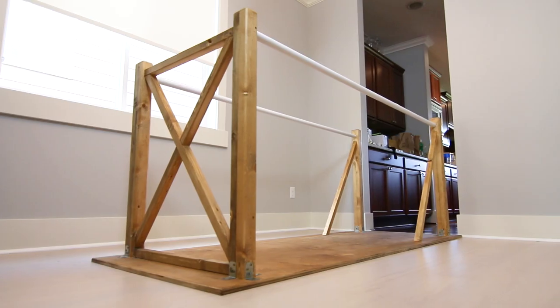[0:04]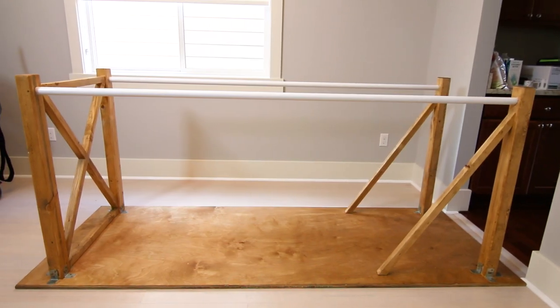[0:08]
For exercise or rehab, any way like that. And basically I hope this video helps a lot of people out there who are trying to make these. So I'm basically gonna list everything in the description for you for all the products and materials I used. And so let's get started.
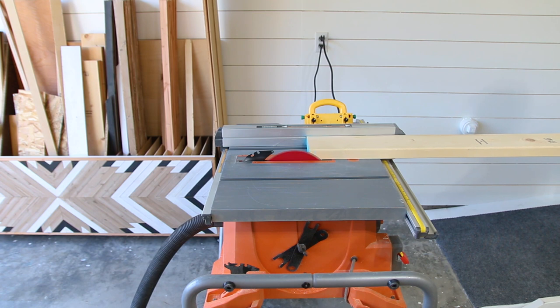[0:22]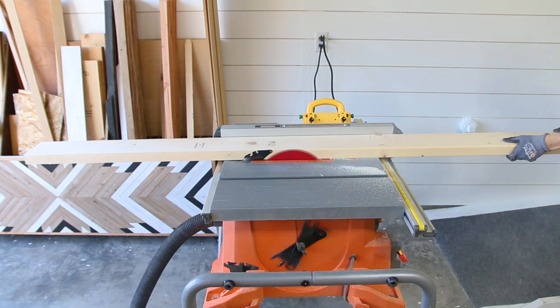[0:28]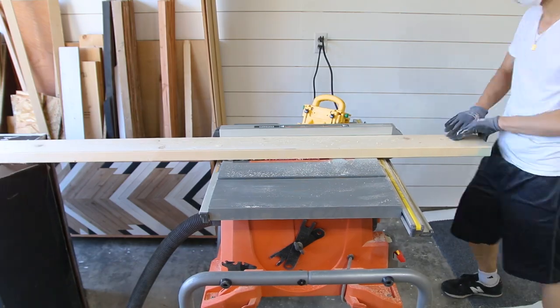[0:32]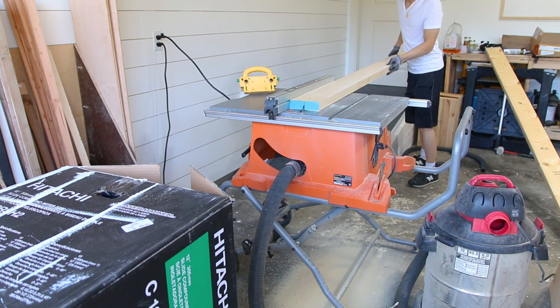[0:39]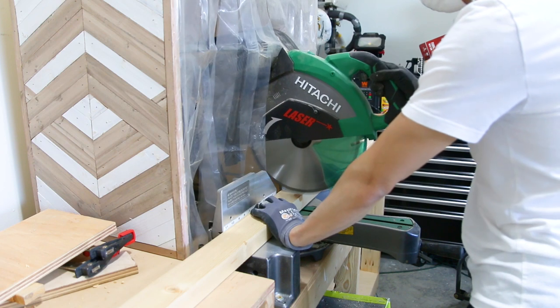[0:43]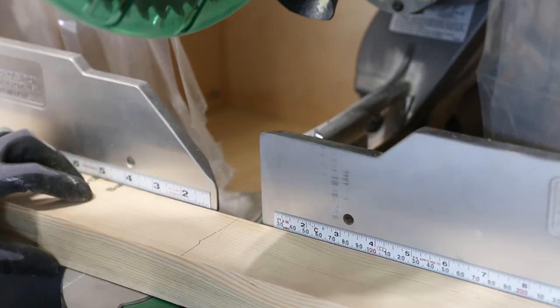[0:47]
One of my family members recently had a stroke and is trying to relearn how to walk again, so I decided to make parallel bars to help them rehab. The first thing I did was I got measurements from the physical therapist for proper height for the bars and also the width for the wheelchair to fit in between the bars. Some will not need a wheelchair to fit inside, but for my situation, that's what was needed.
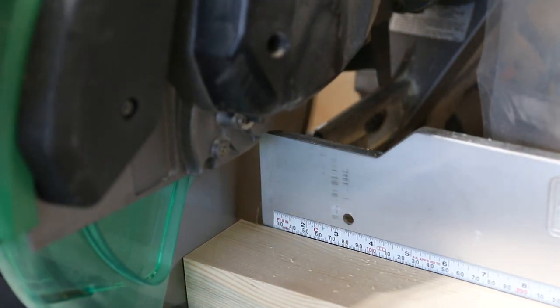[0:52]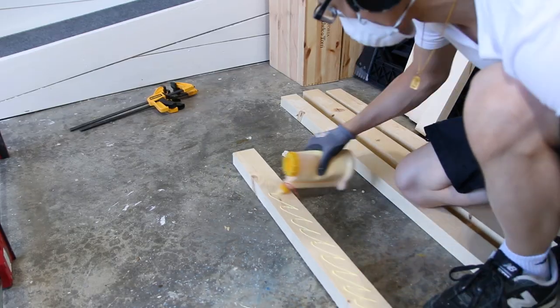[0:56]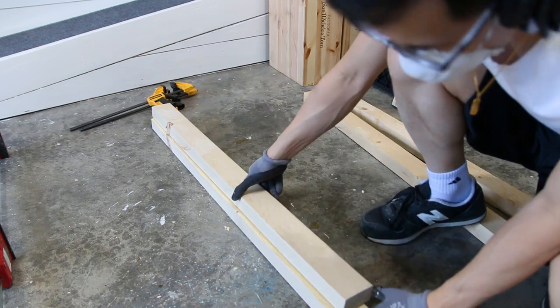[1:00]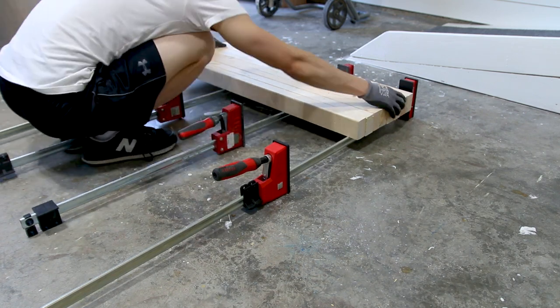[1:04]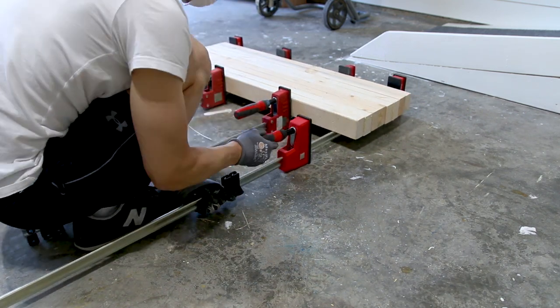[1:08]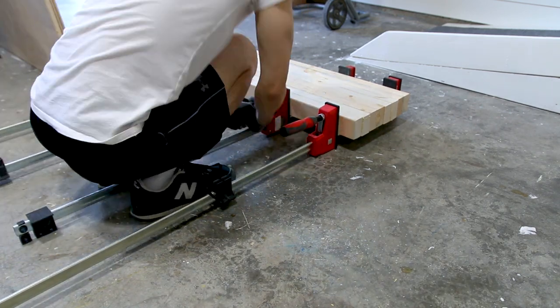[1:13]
You could also just make parallel bars for exercise. So this project actually has dual usage for me, and I can do dips, work out my abs on these bars. So for those of you who want an in-depth detail on how I built this, the second half of the video will go over everything in more detail and instructions.
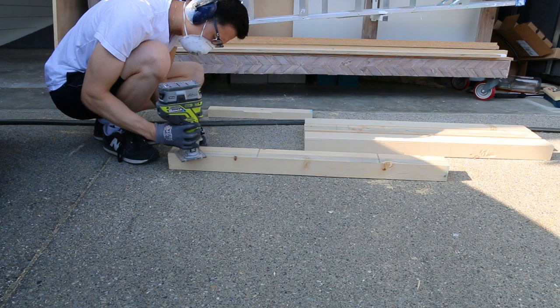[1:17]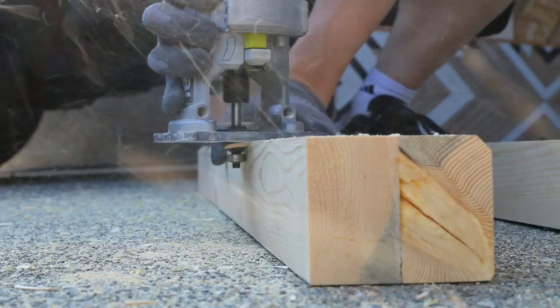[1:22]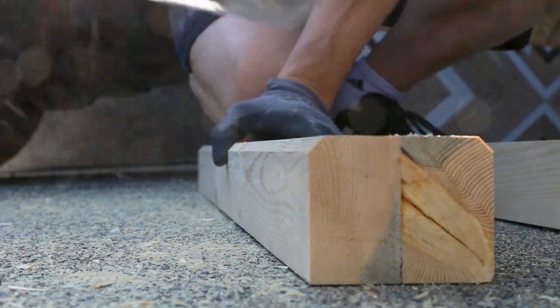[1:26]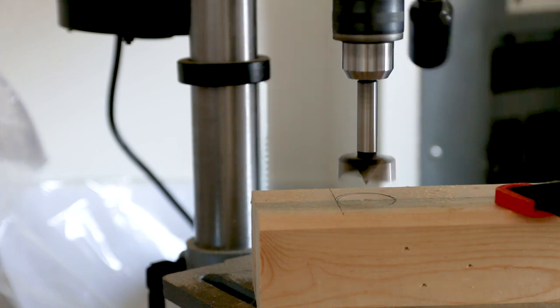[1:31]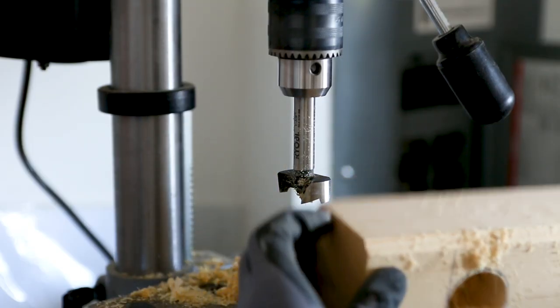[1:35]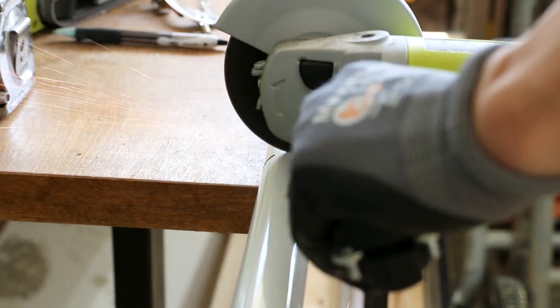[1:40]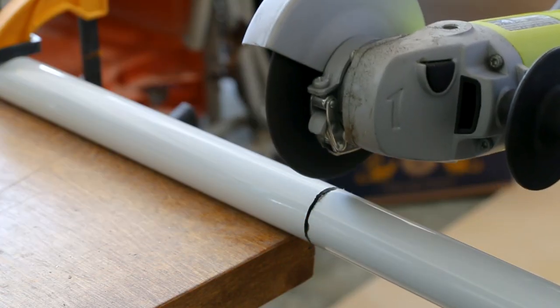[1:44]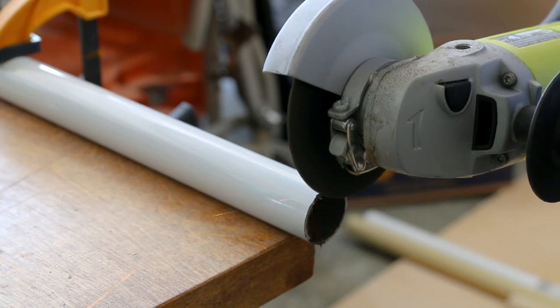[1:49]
When I first started to think of a design, I knew I wanted the parallel bars to be portable. I've seen a lot of videos on YouTube and Google search where people dig holes and pour cement to secure the legs of the parallel bars. There are also a lot of designs where people use PVC pipe that did not look aesthetically pleasing and just didn't look very stable in my opinion. And so I decided to use wood and metal for my main materials to build this.
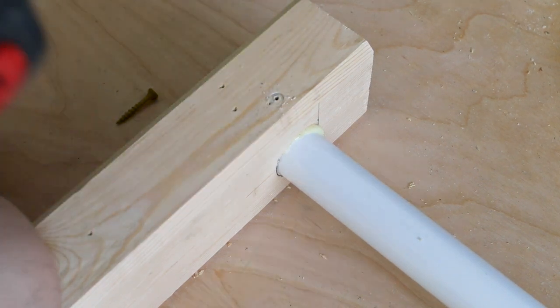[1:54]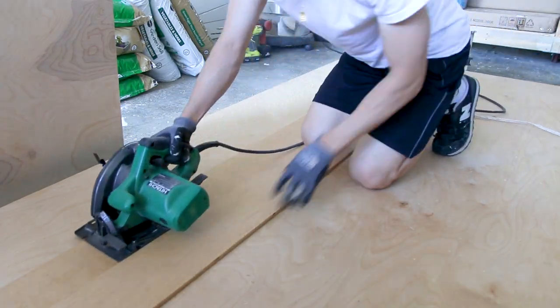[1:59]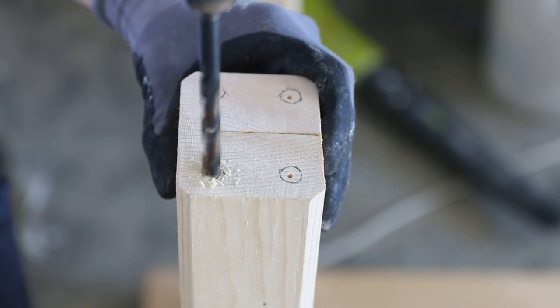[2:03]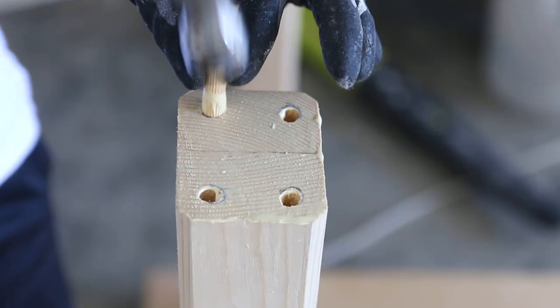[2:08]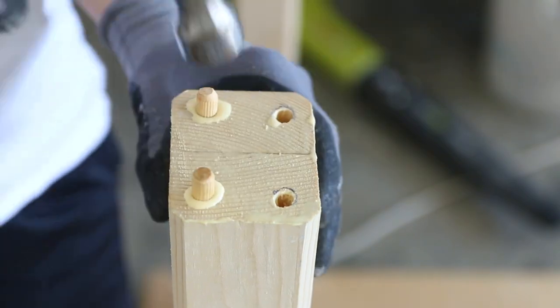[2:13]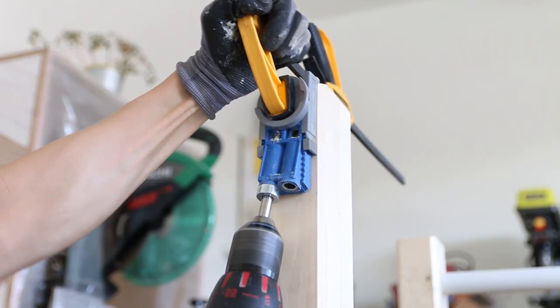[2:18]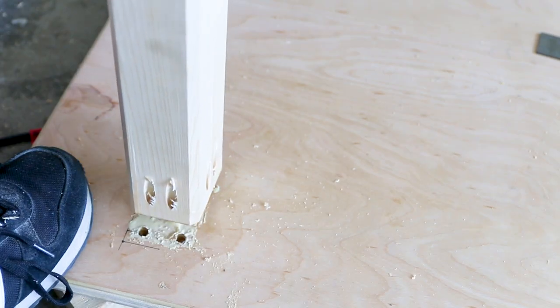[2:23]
The base was 3/4 inch maple plywood, and the legs were 2x6 legs cut in half and glued together. And then I used 1 1/4 steel closet pole rods as the bars. To secure the legs in place, I used wood glue, pocket screws, wooden dowels, and metal brackets. To secure the metal bars in place, I first drilled a hole into the side of the leg or pole, and then I used a screw to secure it in place.
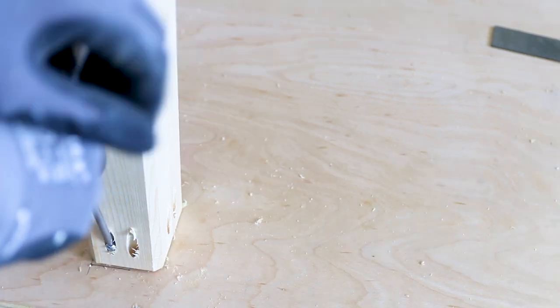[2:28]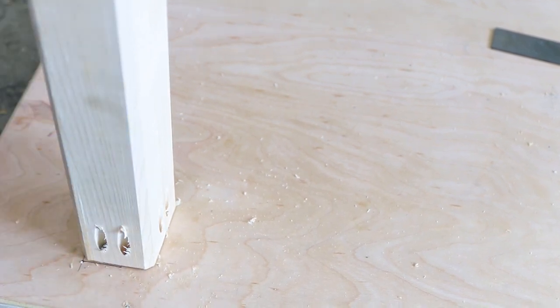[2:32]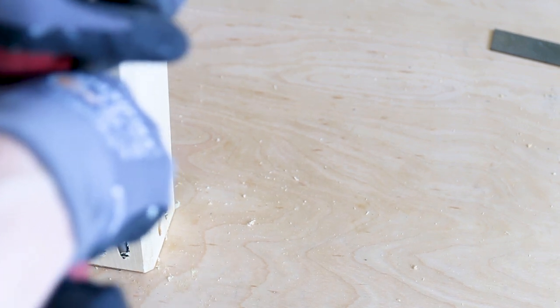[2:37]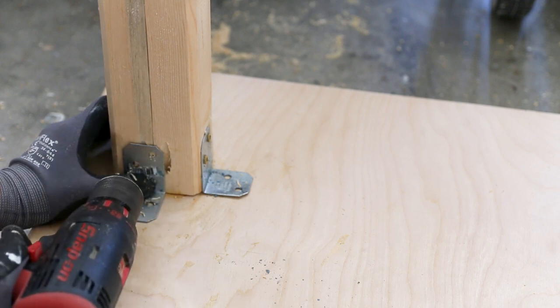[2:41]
Then I decided to make a farmhouse style end with an X design. This is both for aesthetics and to add strength. Then for the final touches, I used a router to round over any sharp edges, and I stained the entire project with Danish oil.
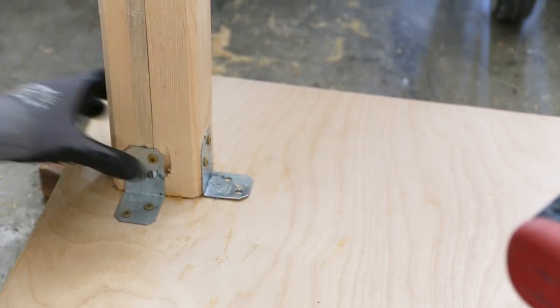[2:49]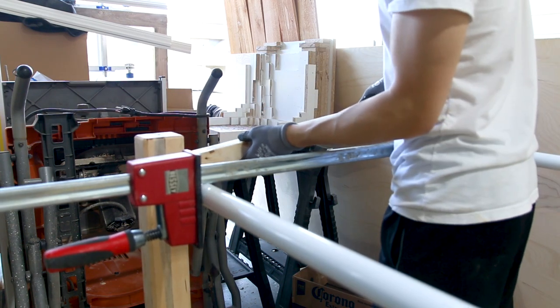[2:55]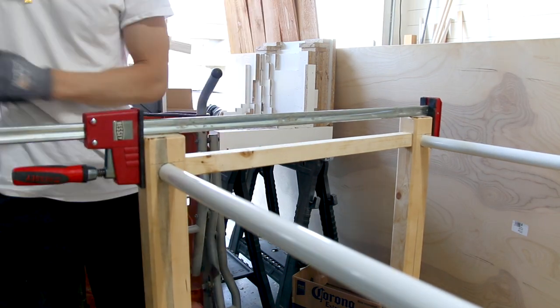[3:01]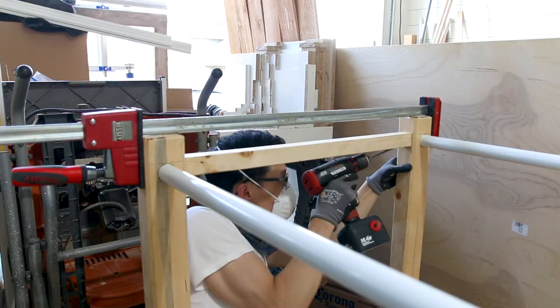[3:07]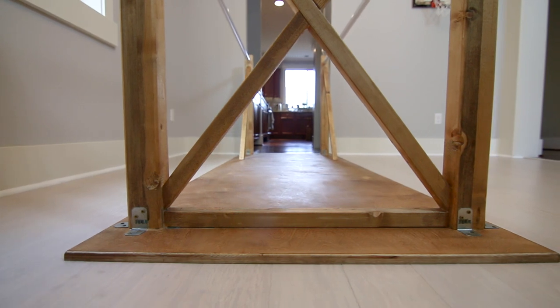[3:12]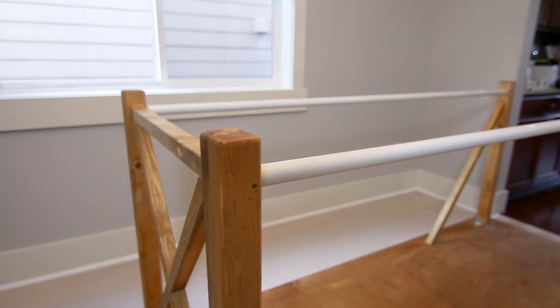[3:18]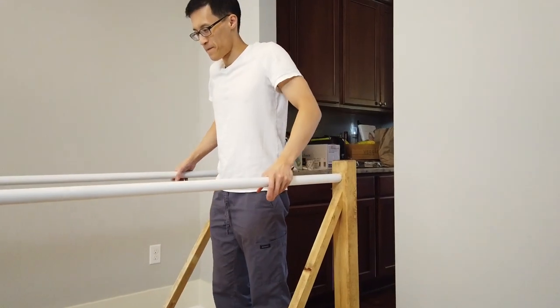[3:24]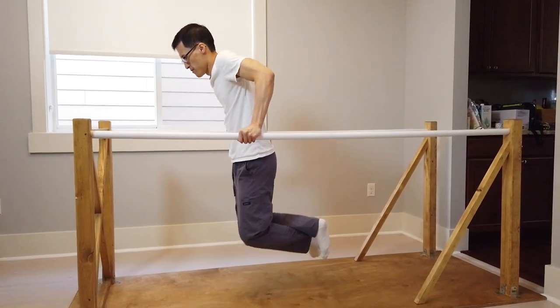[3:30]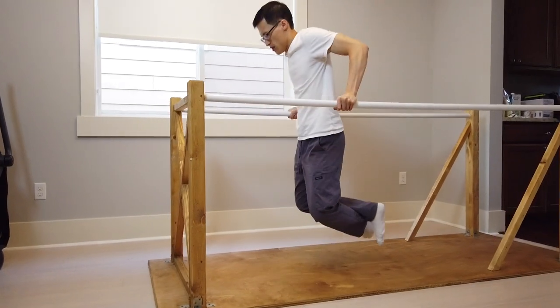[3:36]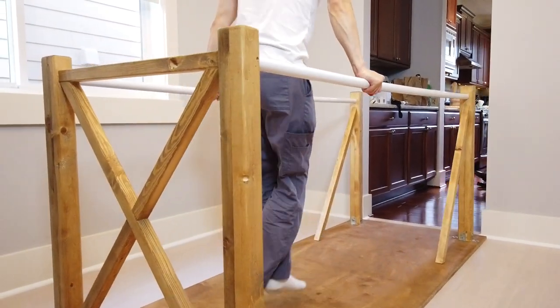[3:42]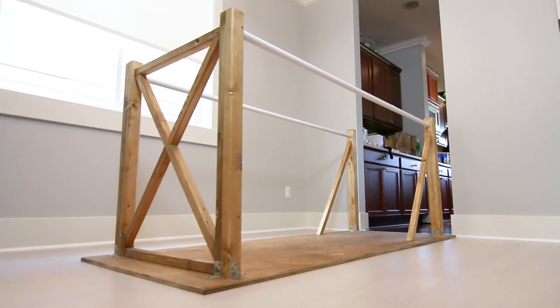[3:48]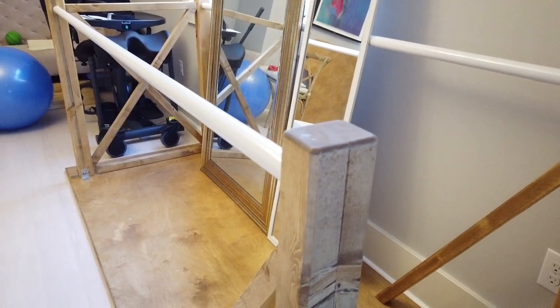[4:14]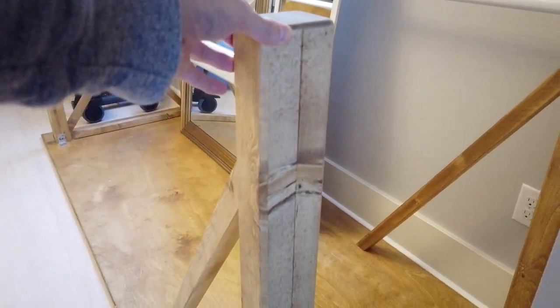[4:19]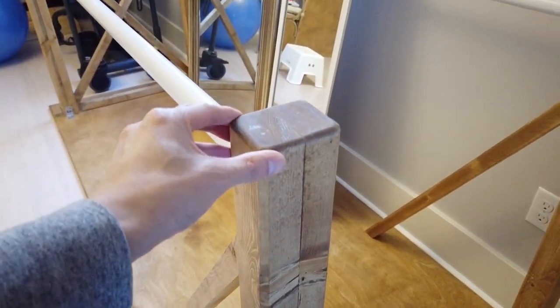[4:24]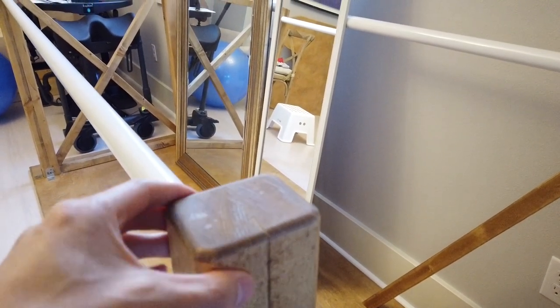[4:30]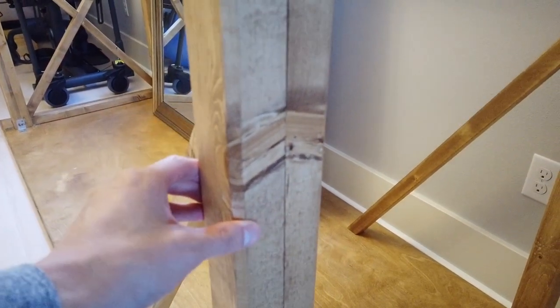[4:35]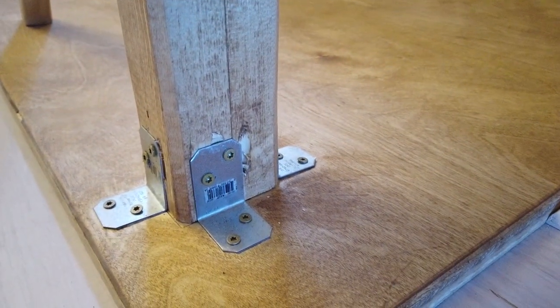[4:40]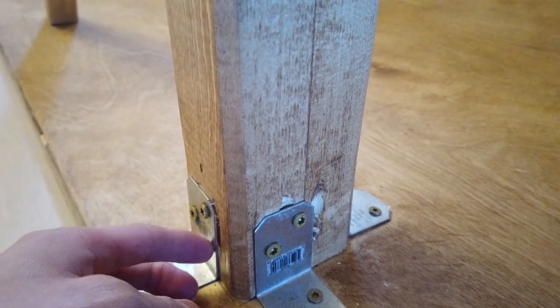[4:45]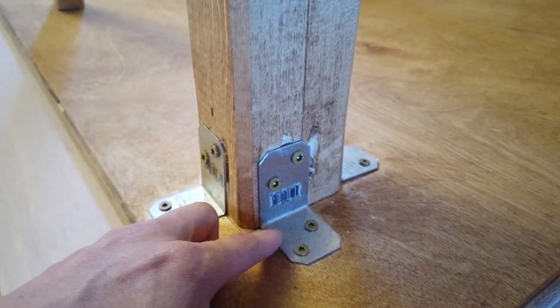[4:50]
Alright, so this is going to be the more detailed section of the video on how I made this. As you can see here, this leg or pole is made out of 2x6 cut in half, and then I just routed the edges round over here to make it a nicer feel. I glued them together and I used pin nails and clamps. And then to secure it to the bottom base here, I used 4 dowels in the middle inside, and then 2 pocket screws on each of the edges, and then I used these metal plates.
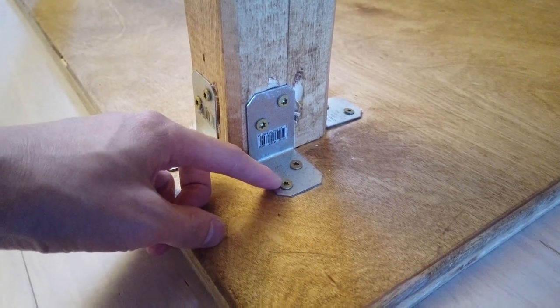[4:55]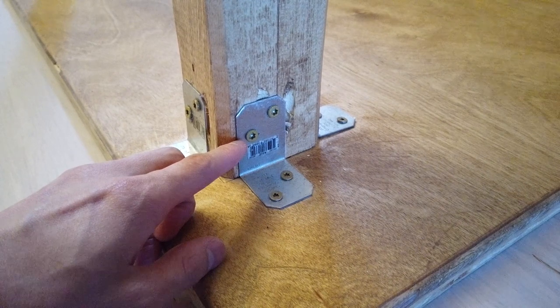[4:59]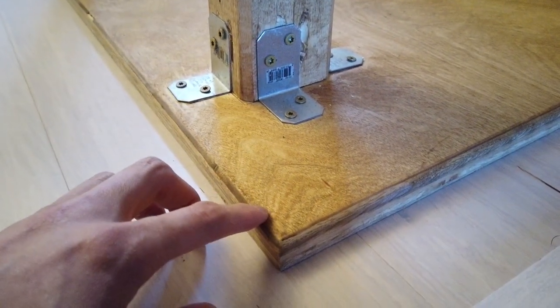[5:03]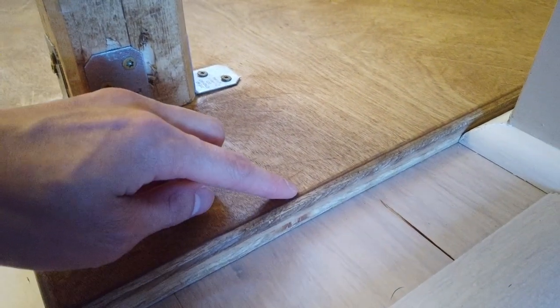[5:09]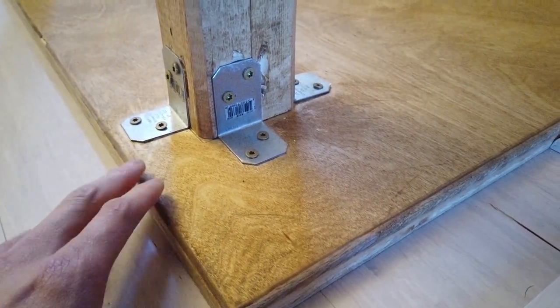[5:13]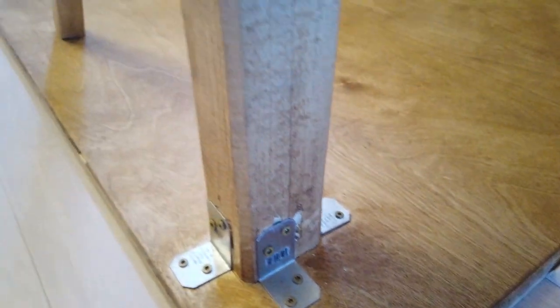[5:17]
Now this one here is 3/4 inch wood screws. These right here are 1 1/4 inch because the bottom here is only 3/4 inch maple plywood. Then I also rounded over the edge here with the router just so it has a nicer feel. And then I used Danish oil to finish the top.
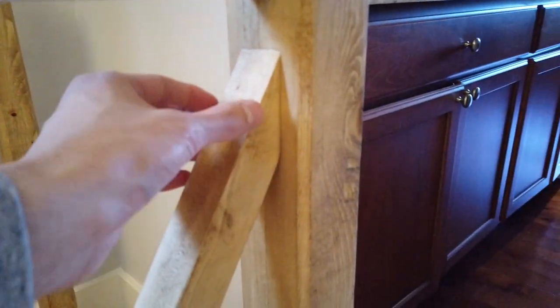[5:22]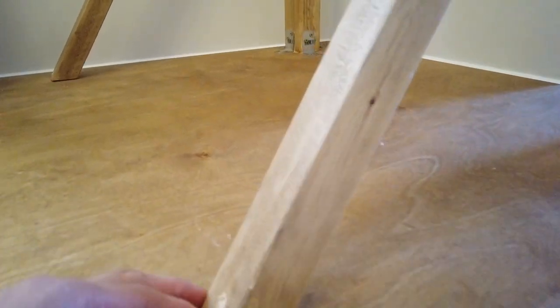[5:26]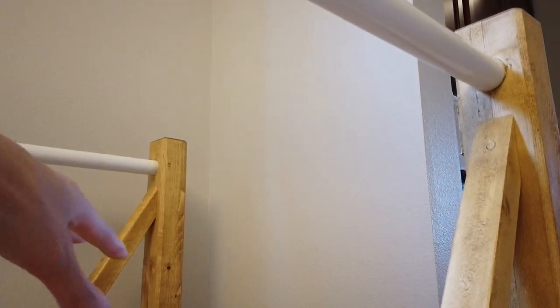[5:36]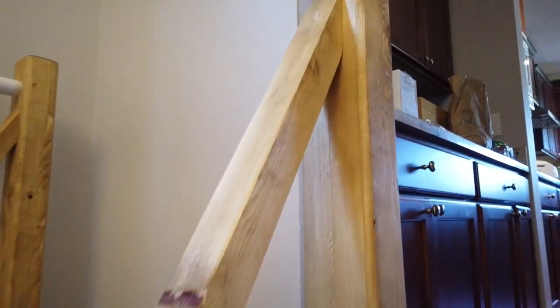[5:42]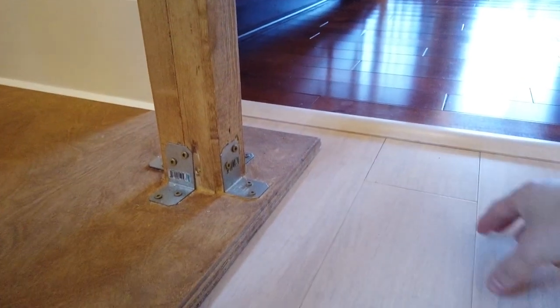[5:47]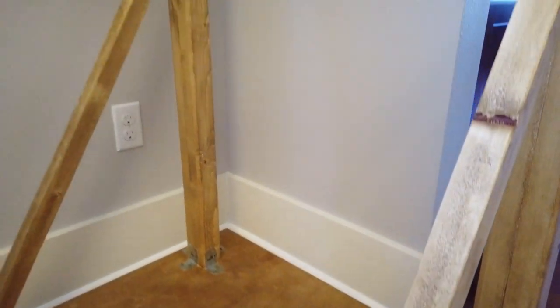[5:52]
Now here, as you can see on the side, is a support that goes all the way down to the base. And I just put a wooden dowel right here and glue. And I don't think it really did much on the ends here where you enter the parallel bars. And I also used a wooden dowel here. It would be best if the wood had a support on the side coming down, but then it would get in the way, so I didn't do that.
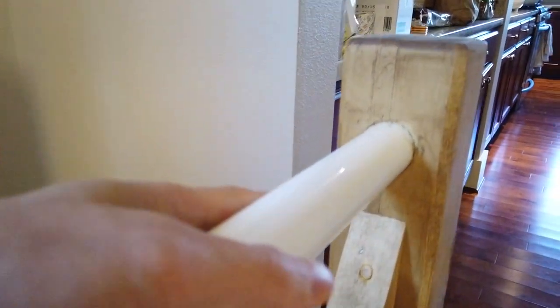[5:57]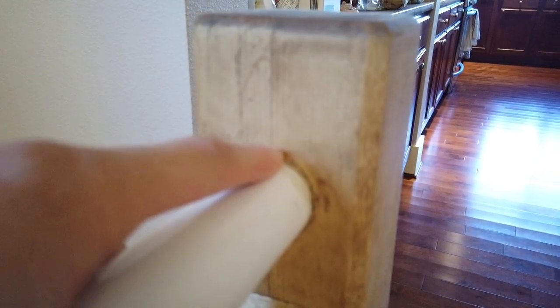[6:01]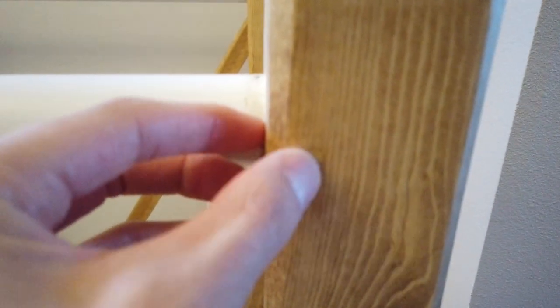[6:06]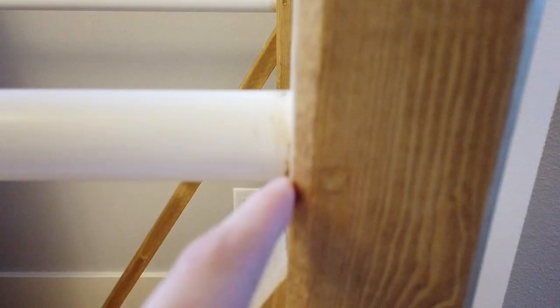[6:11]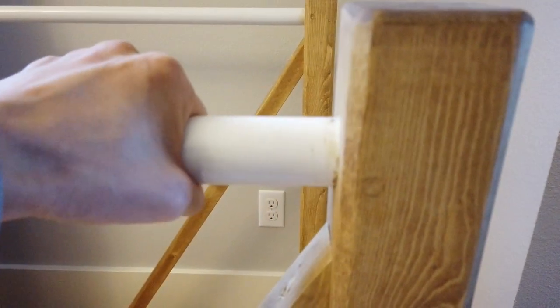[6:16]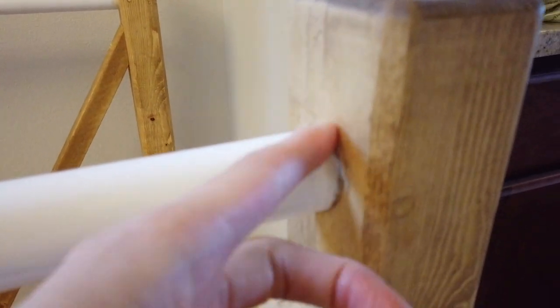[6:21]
So to install the closet rod here, I used a Forstner bit and I drilled a hole here and then I inserted it. And then from the side, as you can see here, I covered it with wood filler, but I screwed a hole all the way through into the closet rod, and then I used a screw to secure it in place so it doesn't move. And I also used Gorilla Glue inside here, the expanding kind, so it would secure it in place if you have a little bit of wiggle room.
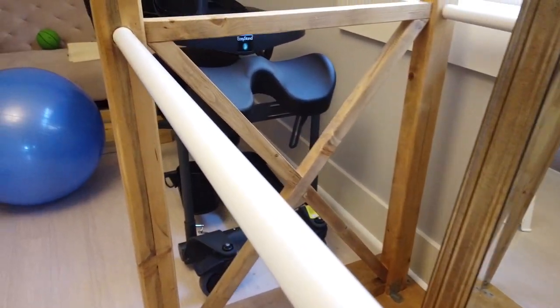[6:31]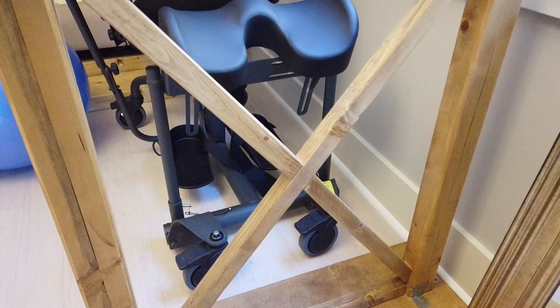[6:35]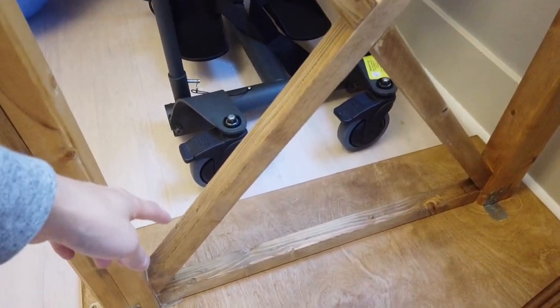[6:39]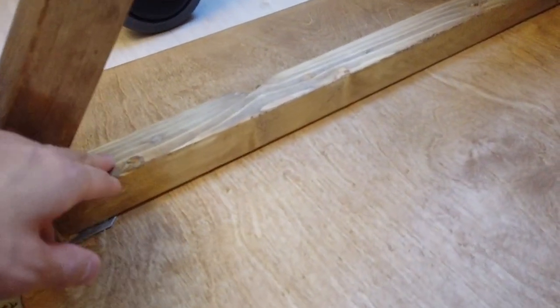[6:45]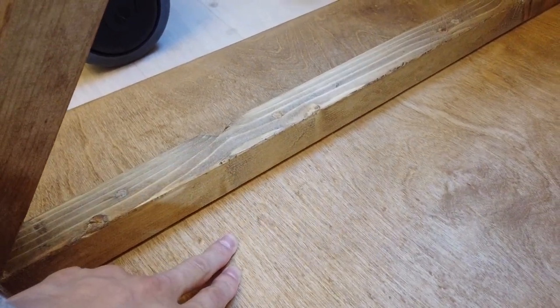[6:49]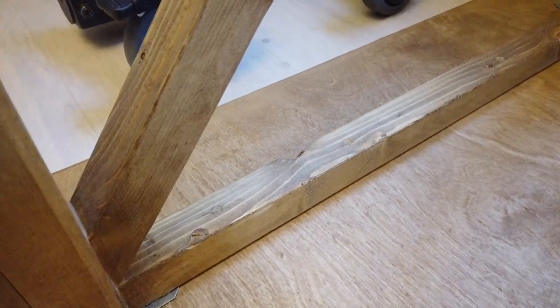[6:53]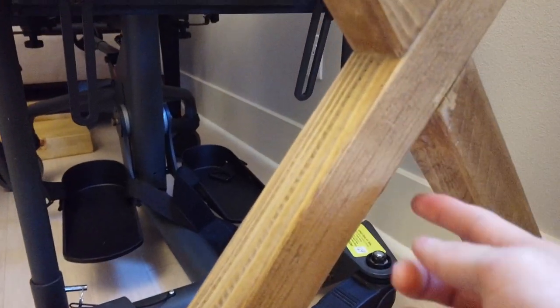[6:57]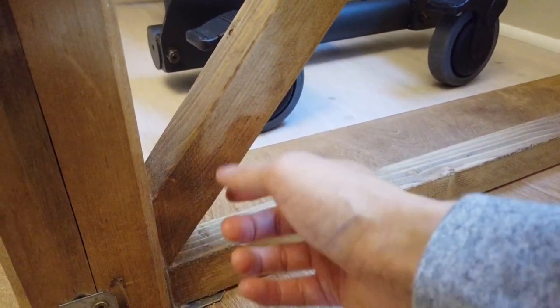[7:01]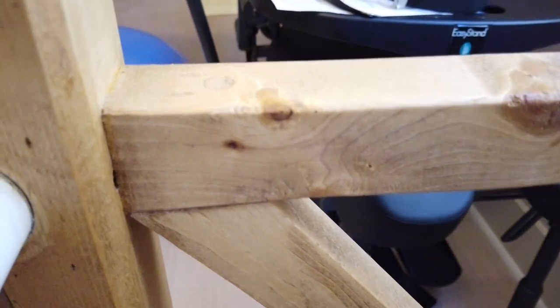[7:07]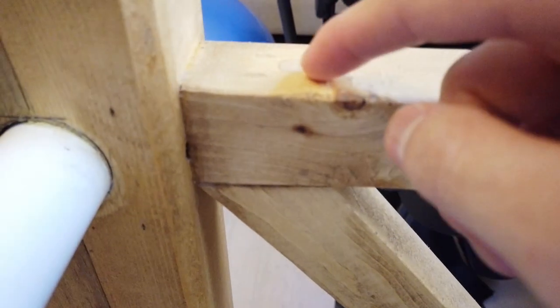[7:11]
Now, to make it even stronger on the edge here, this is where the real support is to create stability. I basically used 2x2s, and I put it along the edge down there, and I secured it in place with wood screws into the base and glue. And then for the X design, same thing, I used wood screws into each place. And then on top here, same thing. You can see here I screwed all the way through into here to secure it, and I just covered it with some wood putty or wood filler.
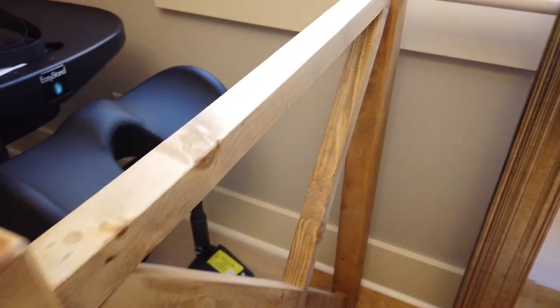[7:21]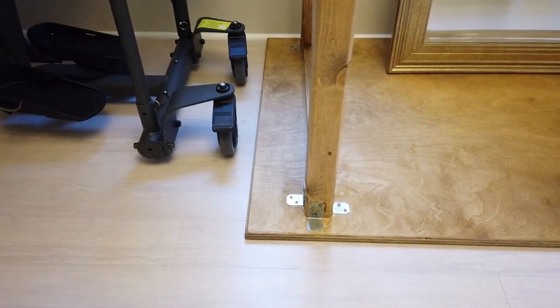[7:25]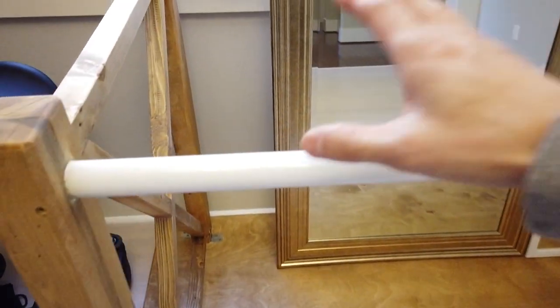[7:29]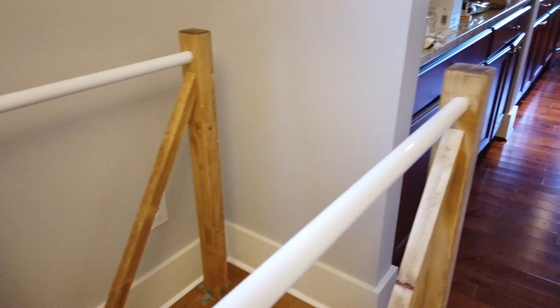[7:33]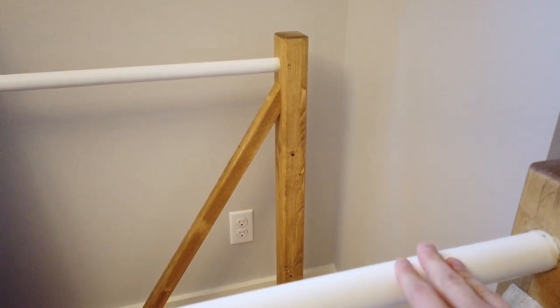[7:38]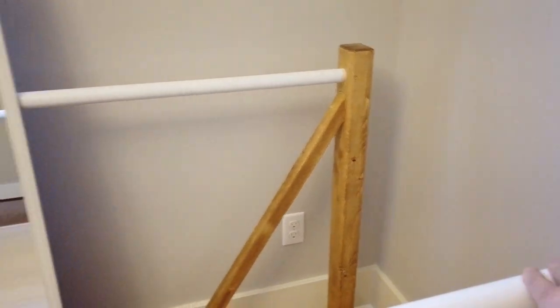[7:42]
And that's basically it. It's a pretty simple design. The ends here are definitely a lot stronger than this point down here. But I can still do dips here and it still holds my weight just fine.
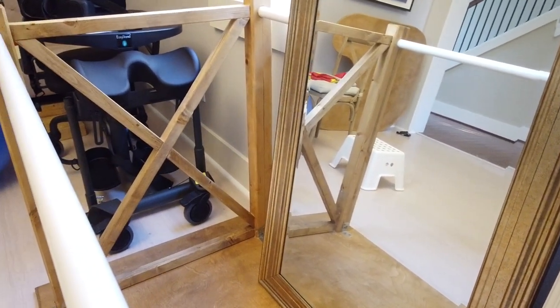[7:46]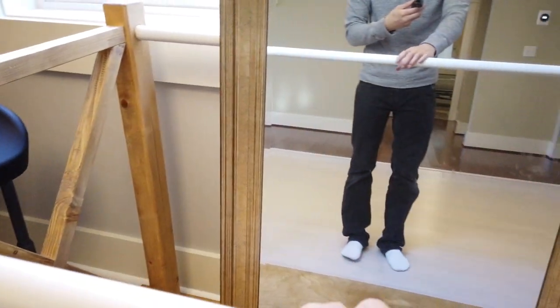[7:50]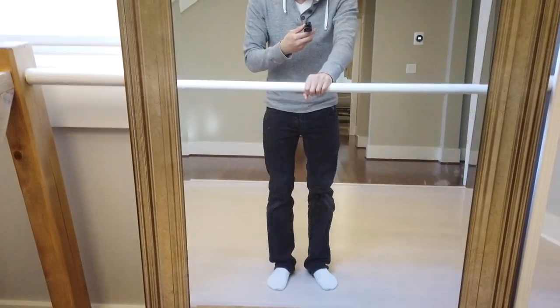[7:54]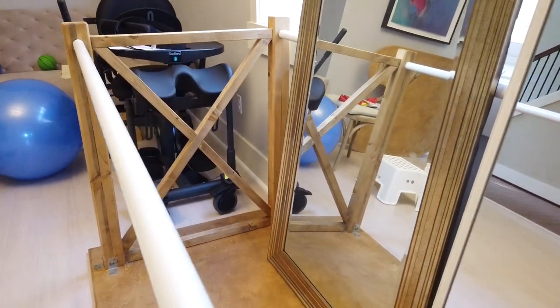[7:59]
And these mirrors here are not part of the parallel bars. It's just there for now to help with seeing yourself and watching yourself exercise. So that's the point of the mirrors, but that's definitely not part of the parallel bars.